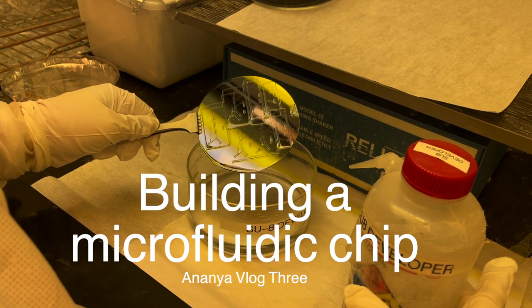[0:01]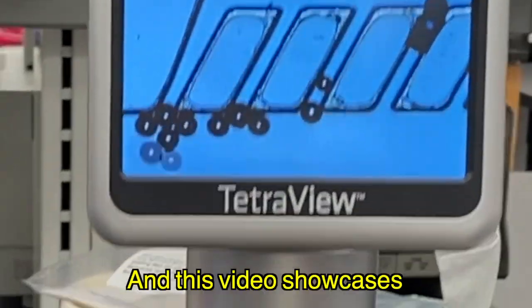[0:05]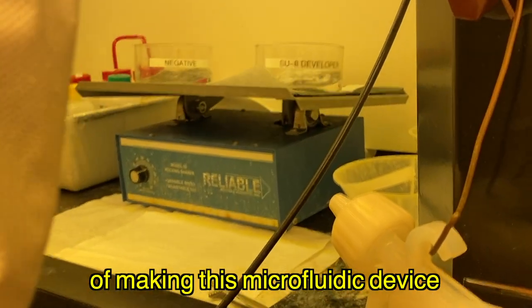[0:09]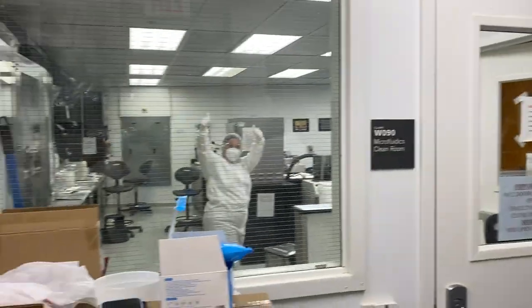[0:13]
Here is a microfluidic chip that can sort cells. And this video showcases the entire process of making this microfluidic device. If you're wondering why we went through all the trouble to make this device, let me explain.
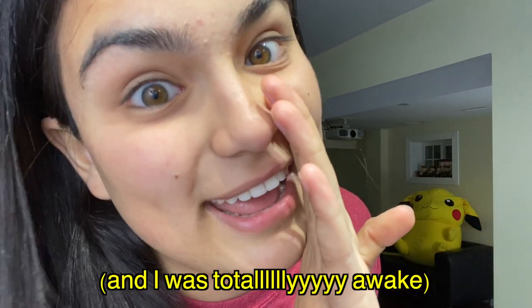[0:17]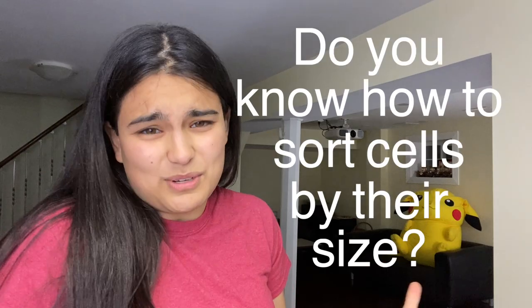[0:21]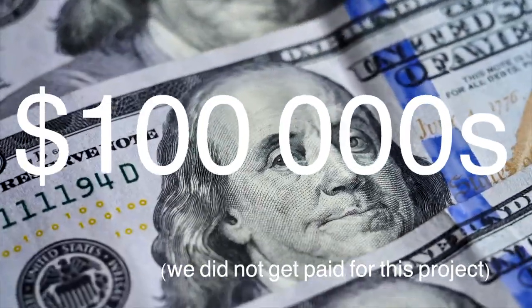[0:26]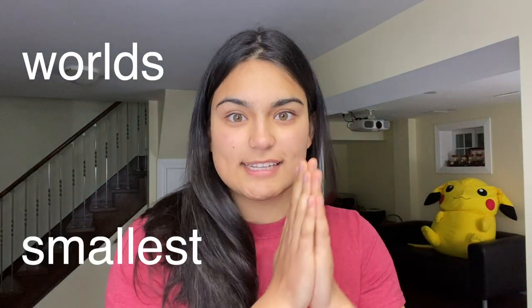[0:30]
So one day, I was in class on Zoom. And I was totally awake. And a Stanford researcher comes on our Zoom call and asks us, "Do you know how to sort cells by size? It would save me hundreds of thousands of dollars if you could." And I heard that and I woke up. She wanted us to build her the world's smallest cell sorter.
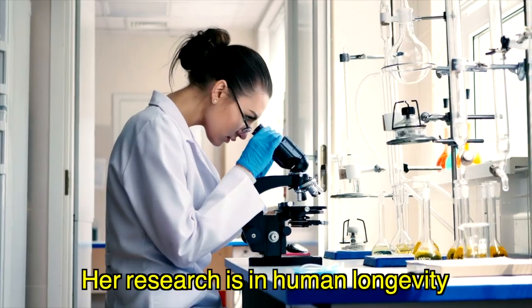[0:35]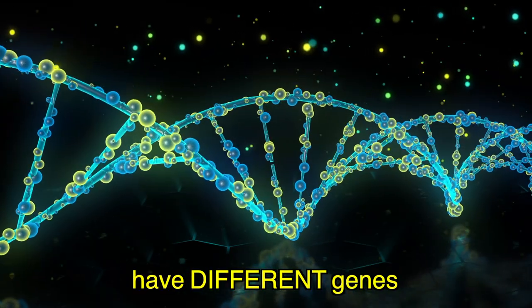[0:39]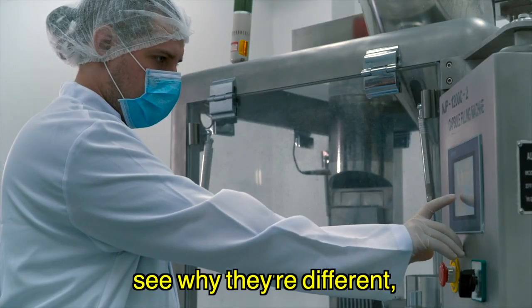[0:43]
So why does she need to sort cells so badly? Her research is in human longevity, and she realized smaller, younger cells have different genes than bigger, older cells. She needs to be able to separate them, see why they're different, and how we can come up with therapies.
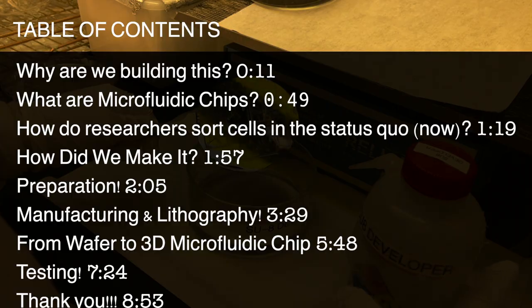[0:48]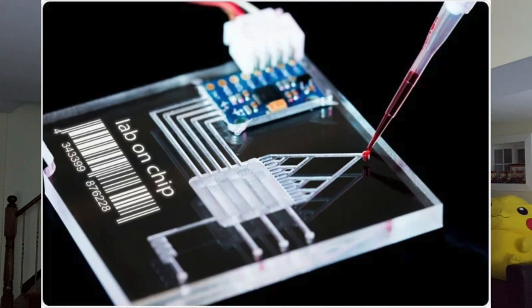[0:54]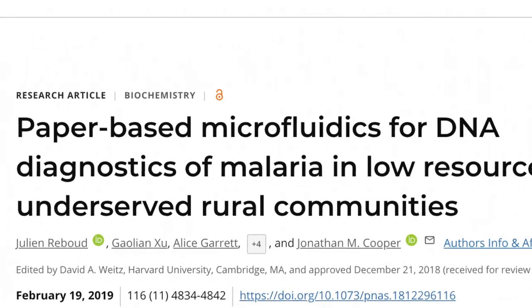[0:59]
Table of contents. First, what are microfluidic devices? They are small, scalable devices that can be used to diagnose HIV, malaria, do huge lab processes on a small chip. And the reason they're able to do this is because when you take fluids and operate them on a micron scale, it changes the laws of physics that particles in that presence will experience. So a particle going through a microfluidic device will not experience inertia in the same way. It will not experience the forces of the real world, which allow us to do fascinating things.
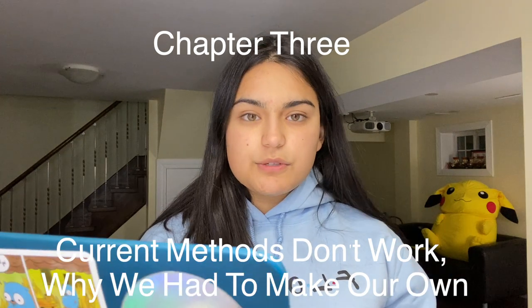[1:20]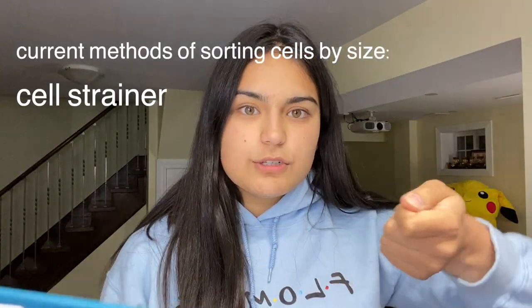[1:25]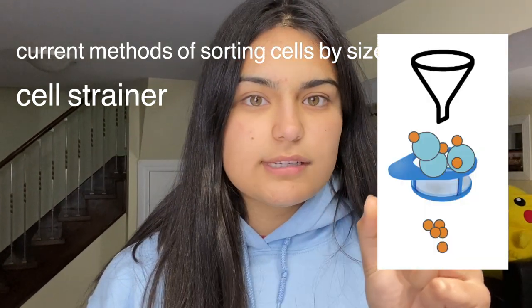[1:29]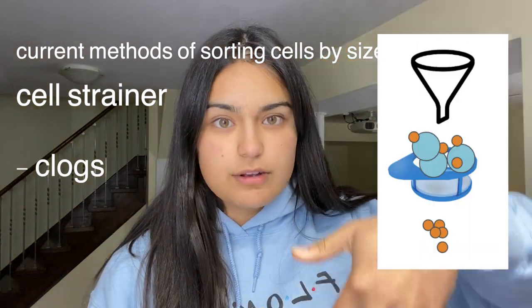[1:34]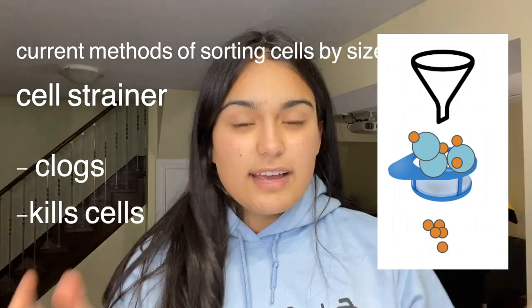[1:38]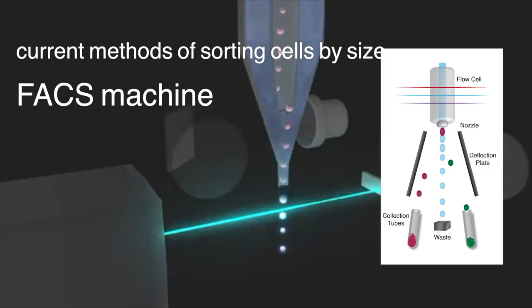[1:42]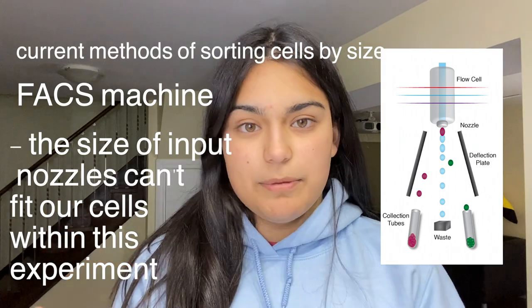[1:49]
Currently, if you want to sort cells by size, there's a few ways you can do it. You could use a cell strainer, which is just like a strainer, except the issue is that if the holes of the strainer are a certain size, big cells can clog those holes and prevent the small cells from filtering through. And the process often destroys a lot of the cells and reduces their viability. The second option is to sort by FACS machine, but the nozzles on those machines are usually about 100 microns, and the cells that we were trying to sort ranged from 40 microns to 200 microns, which could not be tolerated by these machines. And so we had to build our own device.
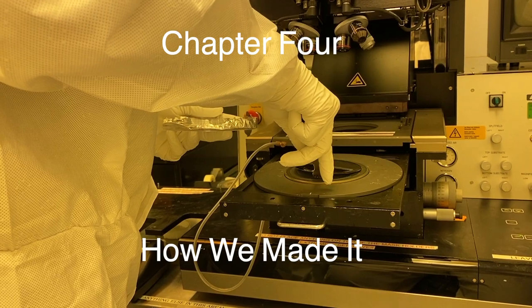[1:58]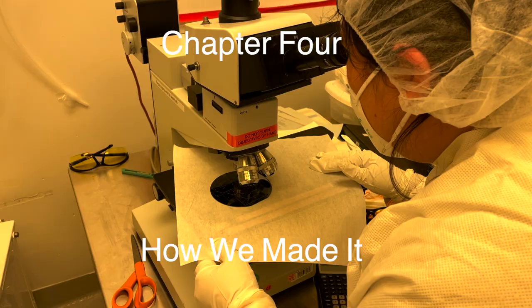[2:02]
So in this video, I'll explain to you how to build a tool that can be used in industry, so sit back, relax, grab a cup of tea. We'll walk through lithography, the process of making things that are so small, and manufacturing them, and how to do this. Now we have to get started on making it and doing the preparation.
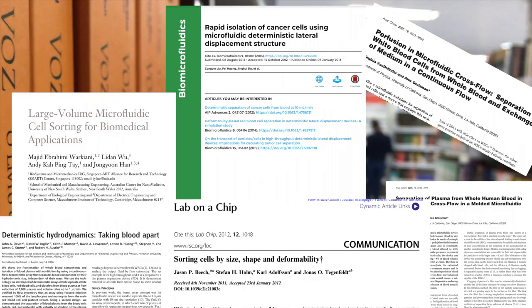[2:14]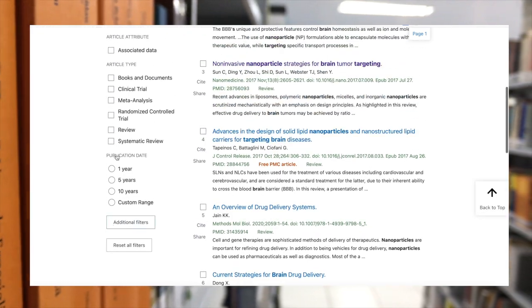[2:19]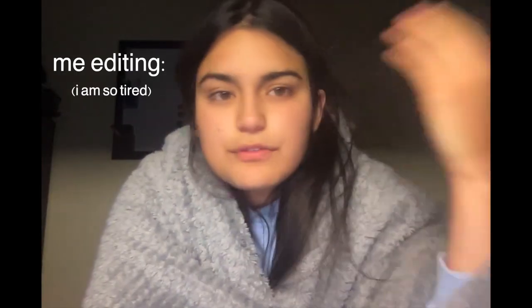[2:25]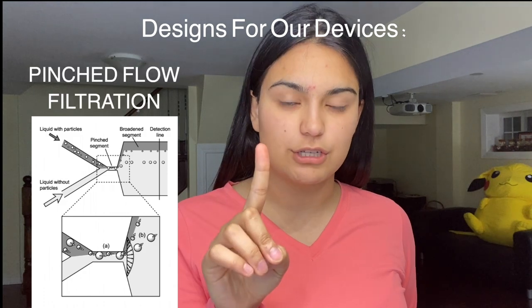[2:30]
When we began, none of us had made microfluidic devices and we had no idea what we were doing. So we had to read the literature, that's step one. And when you're reading literature on a new subject and you search in PubMed, it always helps to check this little box called review articles, because those are introductory articles. And we found there's a few ways people make these microfluidic devices. One was called pinched flow filtration, and the second one was called cross flow filtration.
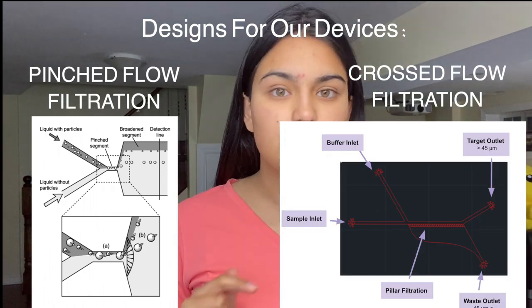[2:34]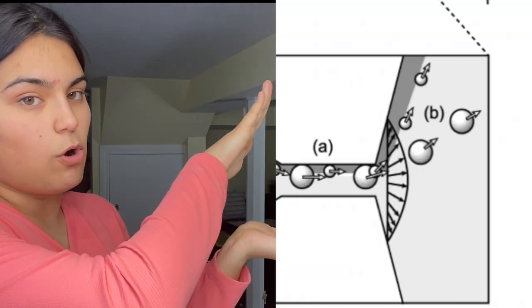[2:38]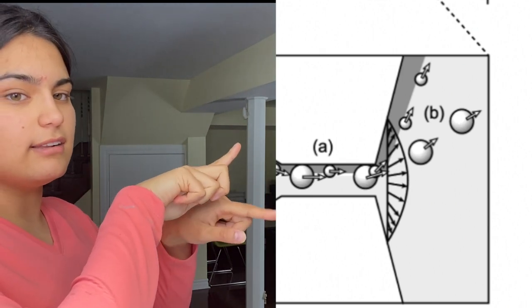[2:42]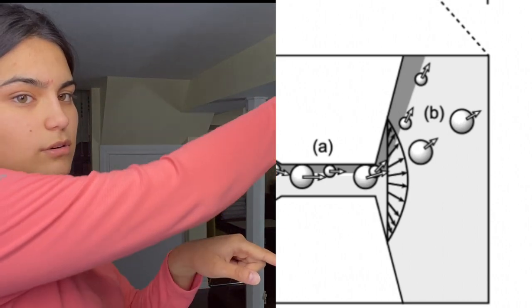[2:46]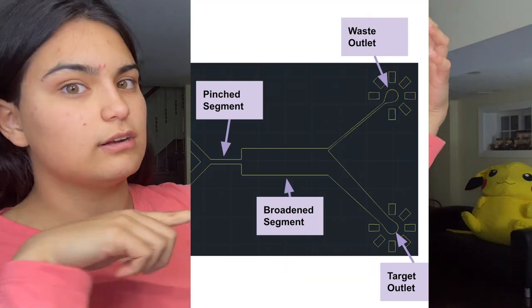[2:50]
Let's start with the first, pinched flow separation. How it works is you have all the cells going through a tube, and then you have an opening. And as soon as the cells go through this opening, bigger cells and little cells will diffract different amounts. So a little cell might bend across the corner and then go up this way, whereas a larger cell would go straight. If you make a little catcher over here and you calculate the angle, you know all the little cells will end up over here.
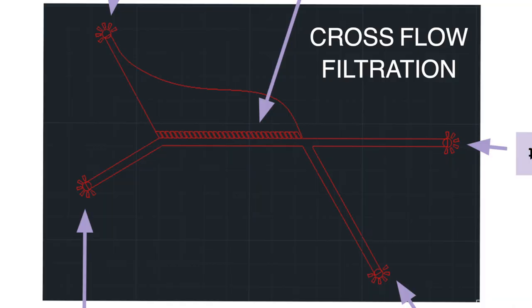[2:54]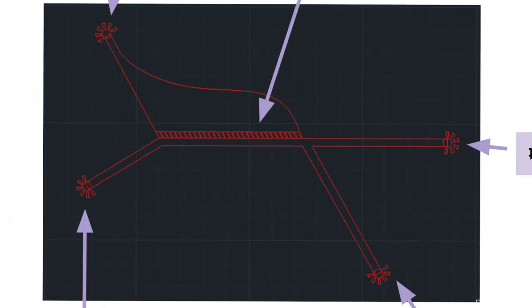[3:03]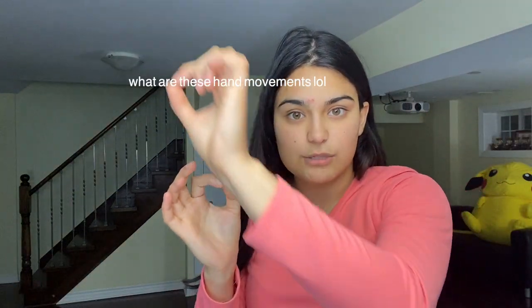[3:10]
The second approach that we decided to use is called cross flow filtration. You put in the cells, and in another inlet you put in a buffer. So you have the cells streaming and liquid pushing these cells to go upwards. And then over here you have pillars. So the liquid will push the cells upward. If the cells are small enough to pass through the pillars, they'll end up on the other side of the pillars where there can be a collection tube for cells that can make it through. And if they can't go through the pillars, because they're too big, the cells will go straight and end up in the bottom catching container. So those were our two approaches.
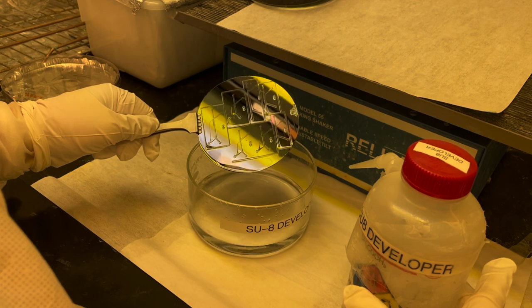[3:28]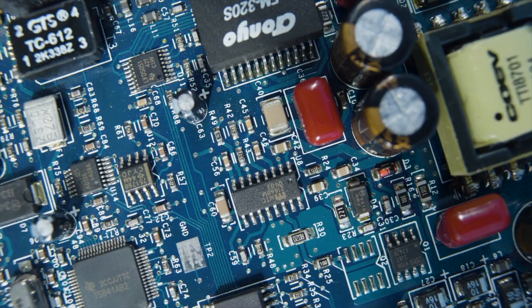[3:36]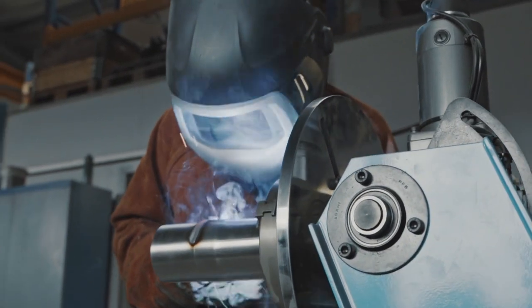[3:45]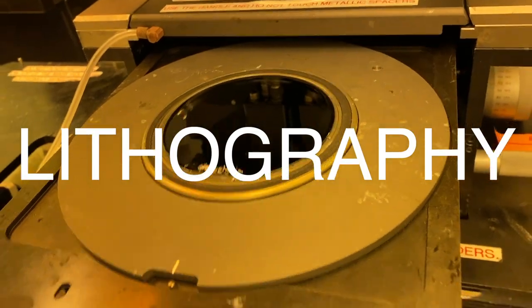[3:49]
Now, we had to manufacture them. And how do we do that? This, I think, is the most fascinating part because it draws on a lot of concepts that people use in making semiconductors and making anything that's small, really. When you want to manufacture something that's really, really small, how do you do it? You can't use welding, you can't use injection molding. Introducing lithography. Lithography is a fascinating concept where you can manufacture things at extremely, extremely small dimensions.
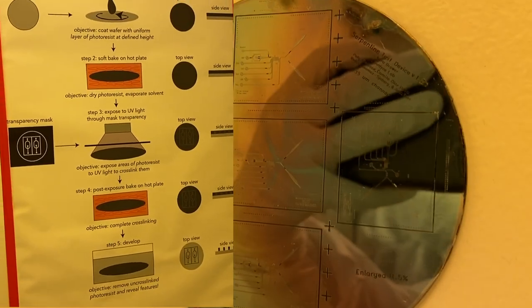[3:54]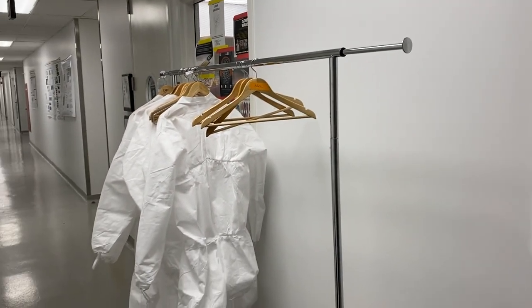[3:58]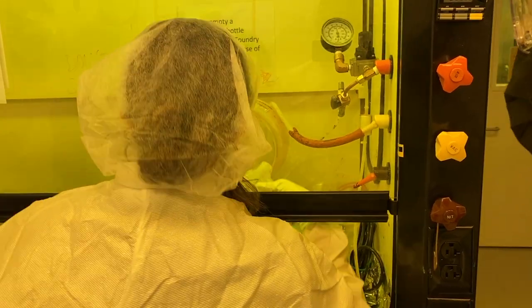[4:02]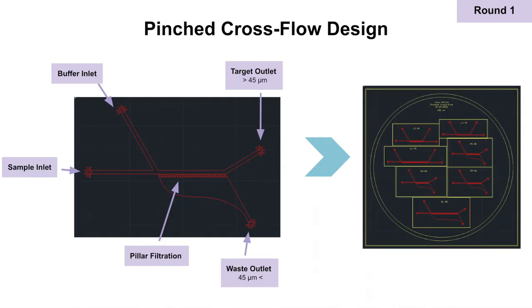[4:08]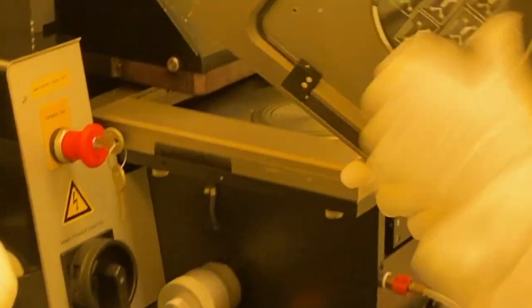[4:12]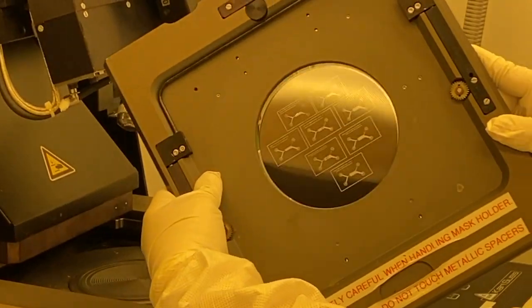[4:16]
To do lithography, you go in a clean room. That means yellow lights, because the light is filtered. It means putting on these clean room suits, so no dust and hair gets in your particles. The first step towards manufacturing this was that we went into AutoCAD and designed in CAD and then sent the designs to a mask printer in order to print these CAD files onto a lithography mask. You start off with a silicon wafer, and you can put something on the silicon wafer called photoresist. Photoresist is this incredible compound that when exposed to light, it changes its chemical properties.
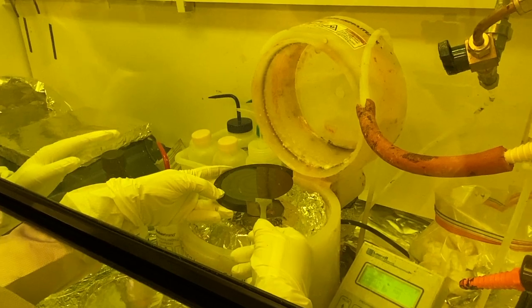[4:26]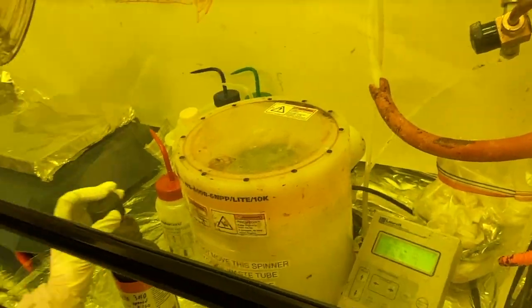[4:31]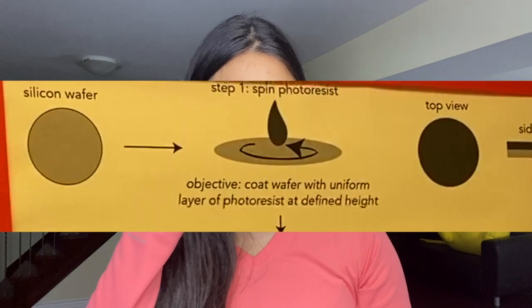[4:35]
And it's like, how do you put a uniform layer on something? Well, you do something called spin coating, where you put on the stuff and then it makes a blob and you spin it really fast and then the blob flattens into a uniform layer. So you have a uniform layer of this compound on your wafer. And then from there, we shine light onto the photoresist.
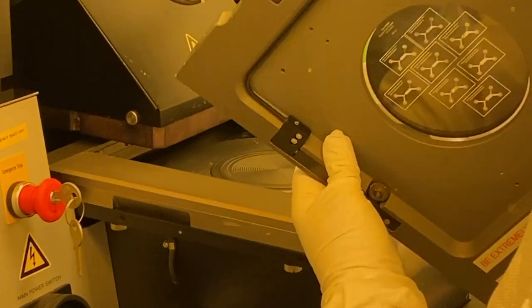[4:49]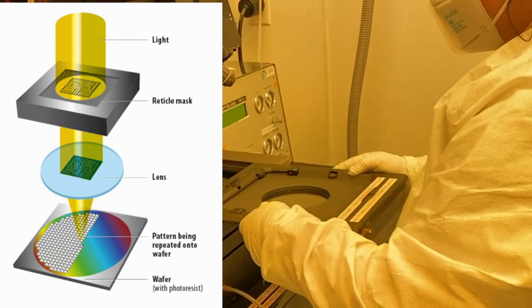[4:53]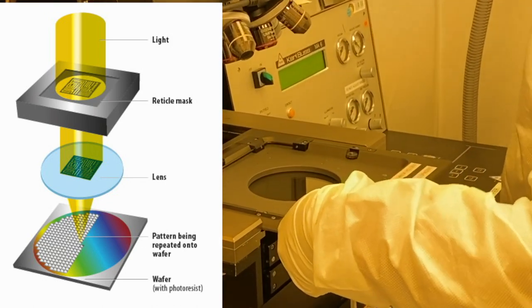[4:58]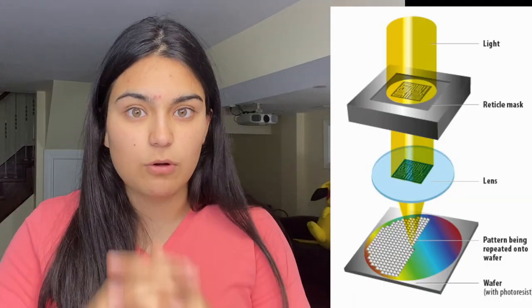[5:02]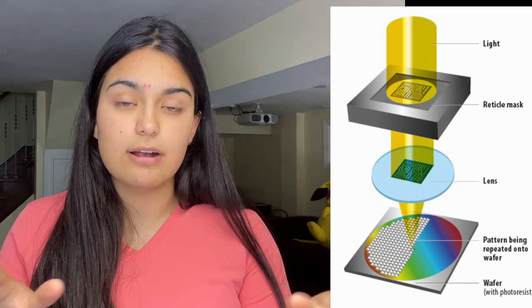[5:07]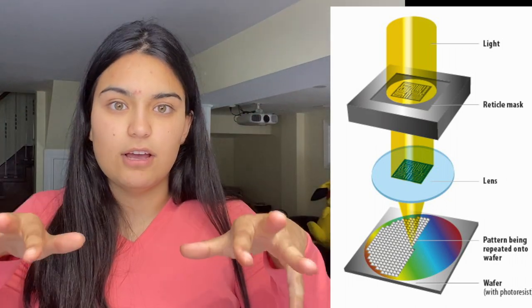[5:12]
So if you have a mask and the mask only lets through some holes of light, so it's covered except for your design that's let through, the light will only go through where your design has left holes onto this mask. And then the light will shine where the holes are, and it'll only change the chemical properties of the photoresist where you want them to be changed. So in those areas, the photoresist will harden and it will cross-link and change chemical structure. And the other areas that were not hit by light because they were covered by the mask will be soft
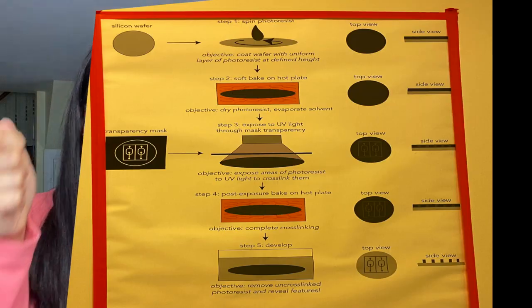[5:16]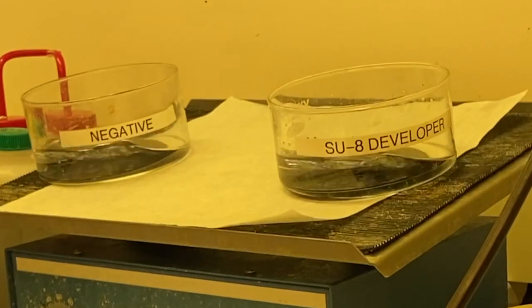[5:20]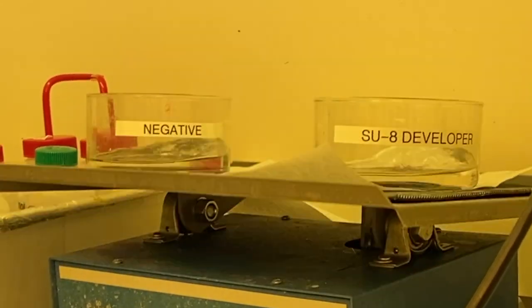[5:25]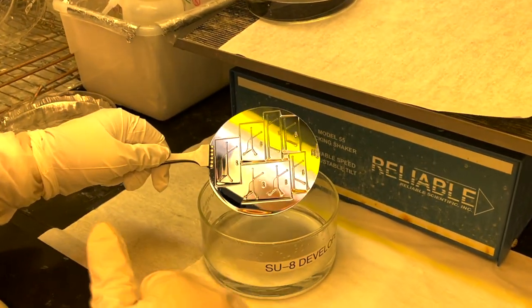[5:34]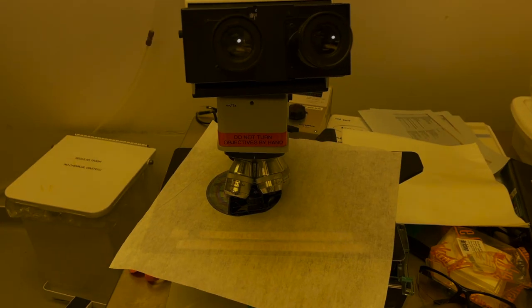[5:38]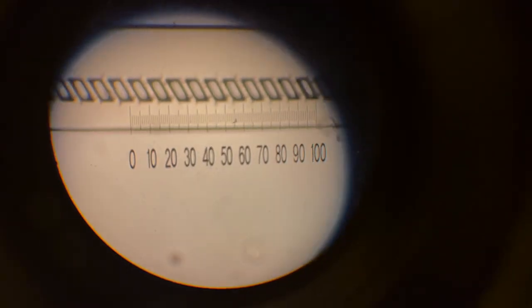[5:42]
and loosey-goosey. Then you're gonna take the wafer and you're gonna put it into something called a developer. And the developer will wash away all the areas that were not hit by light, because the developer will react chemically with the areas that are still soft, and it'll leave the areas that are cross-linked. And so what ends up happening is you're left with a wafer that now has nanometer level indents and structures that were caused because of this light changing the photoresist being washed away formula.
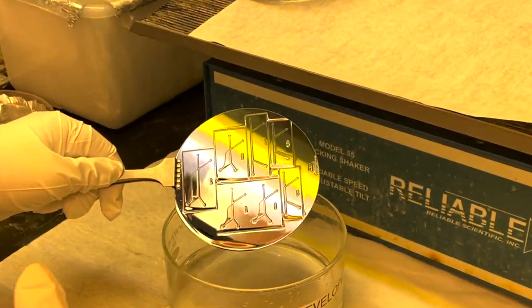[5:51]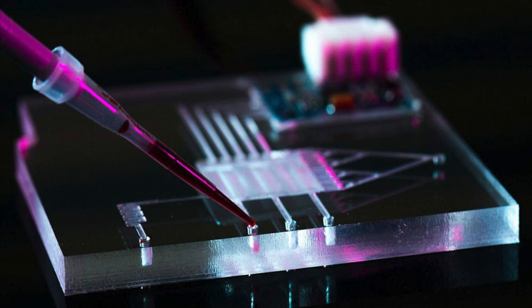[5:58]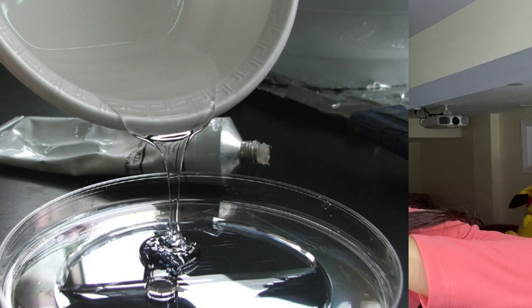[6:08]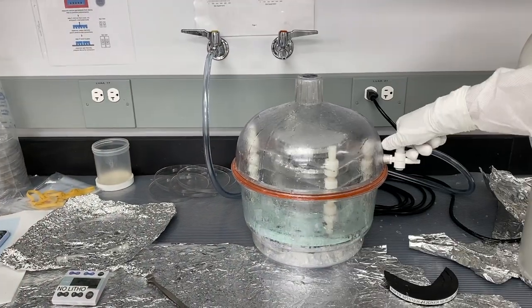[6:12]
And now you're like, Ananya, how dare you dupe me? We have a 2D structure here. How do we turn it into a 3D microfluidic chip? Because a microfluidic chip, you have to inject cells into it, you have to put liquid into it, but right now we have a silicon wafer with some lumps on it. From here, we want to use this gel called PDMS and pour the PDMS onto our silicon wafers. Then we put them in a vacuum chamber, and the purpose of this was so the PDMS would remove all the air bubbles. So it'll just be solid PDMS blobs on this silicon wafer.
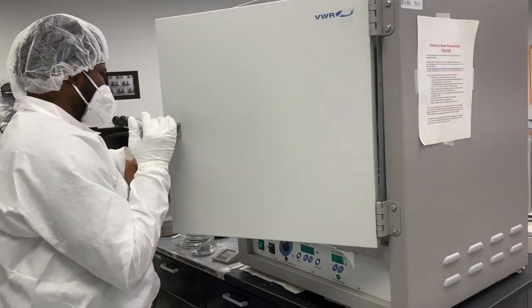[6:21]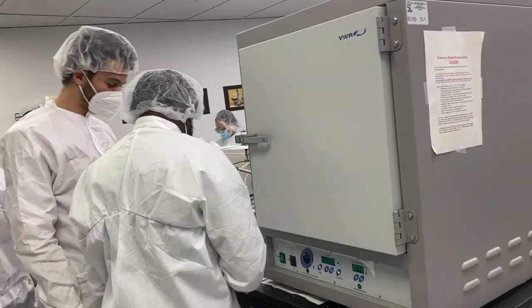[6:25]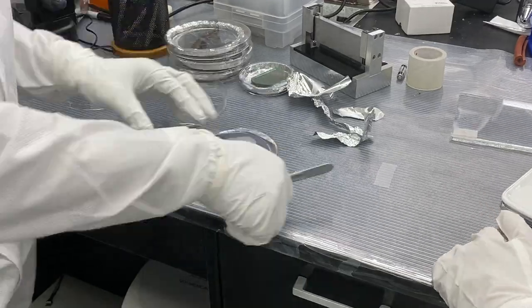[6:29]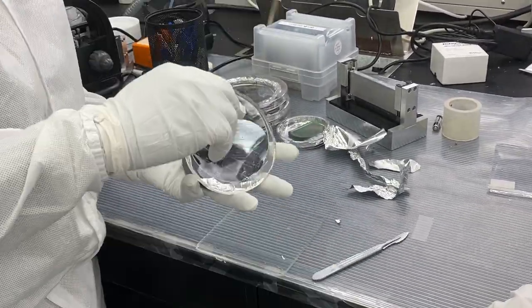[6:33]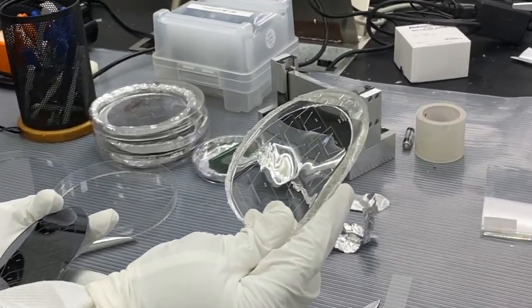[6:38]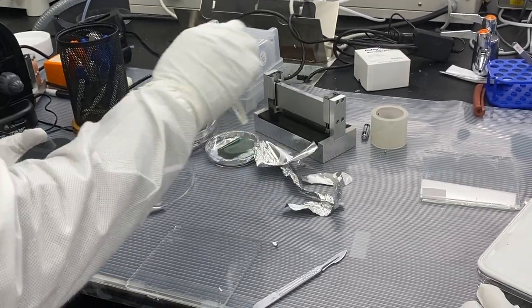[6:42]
Then we put it in an oven, and the PDMS heated up and turned into a solid. When we took it out of the oven the next day, it was like a gel that was stuck on top of the silicon wafer. From there, we peeled it off the wafer. So now we have this gel that has a bunch of imprints on it. So like a bunch of little indents where we wanted it to be from our wafer. Like they're to the nanometer level precision.
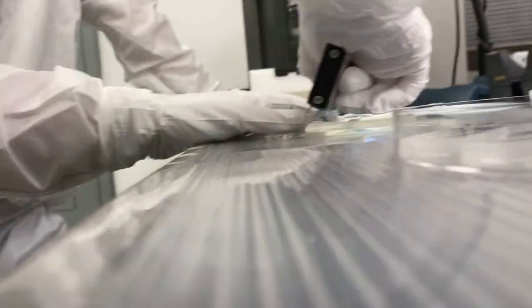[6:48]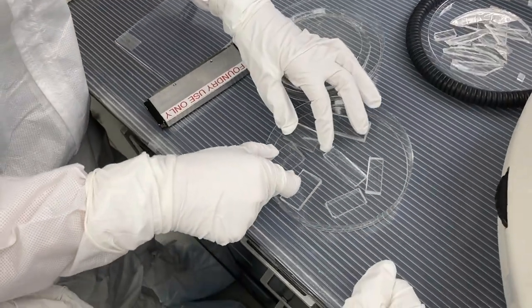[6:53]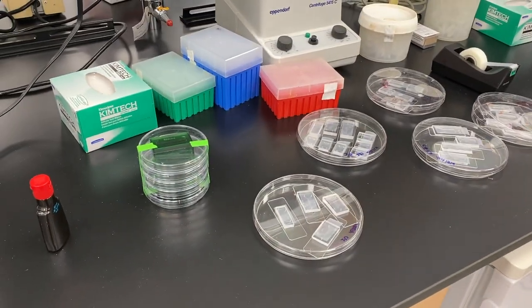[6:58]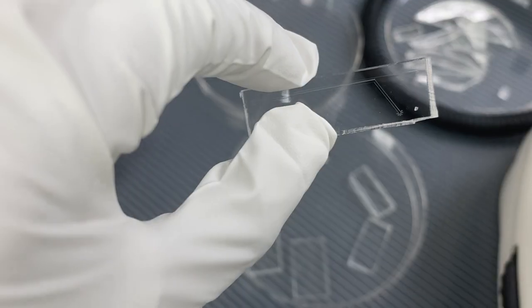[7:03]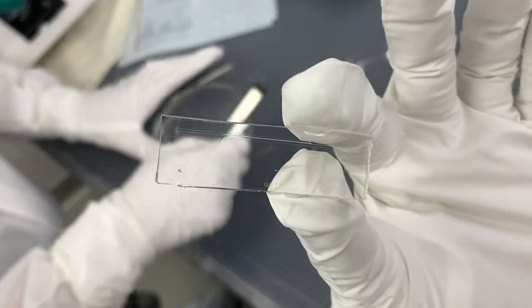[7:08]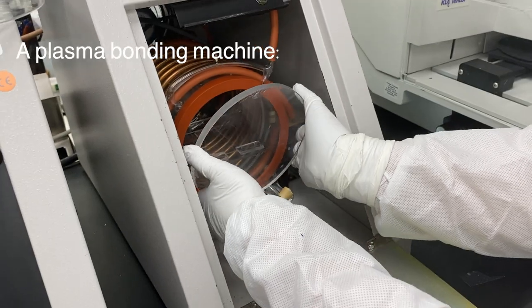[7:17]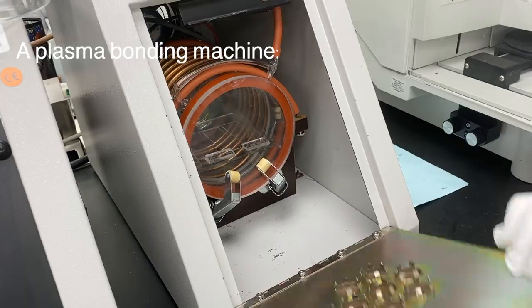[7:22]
And then we cut them up so they look like tiny little chips rather than being many chips on one wafer. Glass slide, which serves as the bottom. We have our gel, and we can punch some holes onto our microfluidic device. And these holes will serve as where we can plug in the inlet and outlet tubes, because the inflow liquid will flow into the tubes, into the holes, through the microfluidic channels on the glass slide, and then out through the output holes. And we bond them to a glass slide.
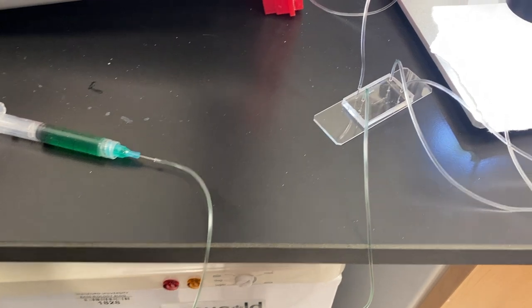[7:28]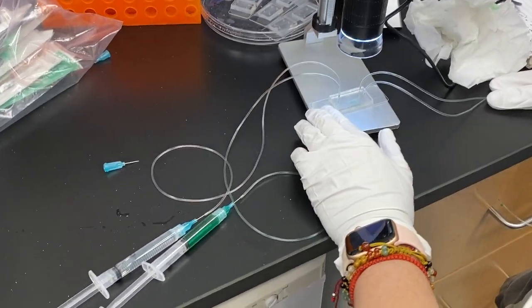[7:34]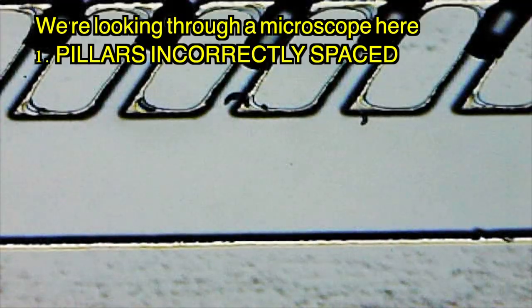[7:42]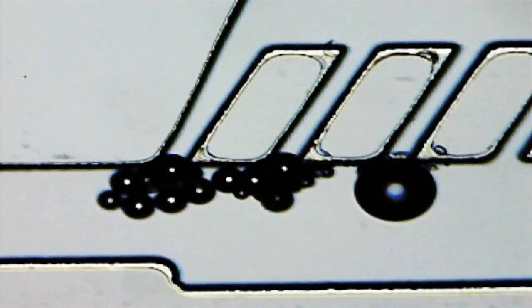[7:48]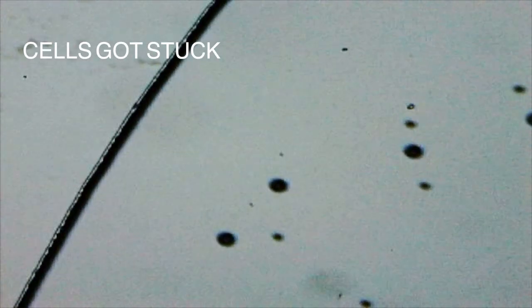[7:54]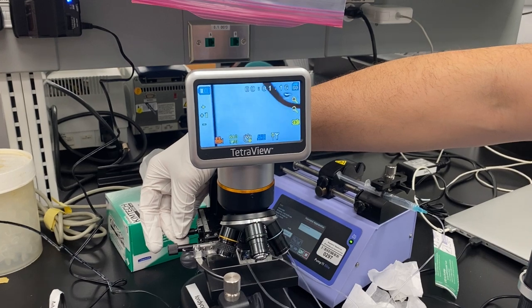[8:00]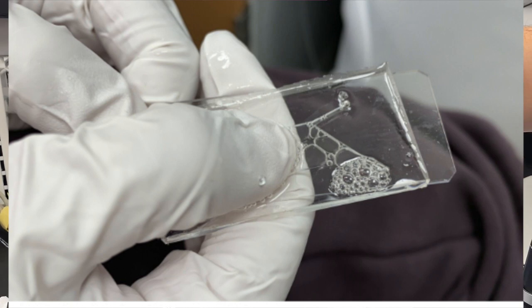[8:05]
And we plasma bond them together so they will never, ever, ever divorce. And from there, we tested it out and we hooked up the microfluidic device with our tubes of cells and buffers, and we saw what happened and it didn't work. Well, the first time we did it, it didn't work because of a few main reasons. The first reason was for the cross-flow filtration, the pillars were incorrectly spaced apart. And so cells of the incorrect sizes could fit through the pillars. The second issue was cells would get stuck to the bottom of the glass. They wouldn't flow through like we thought. They would just sit there and get stuck. And the third thing was that our pinched flow filtration device separation didn't really work out. And there was a lot of bubbles. Our microfluidic device had bubbles, which is bad.
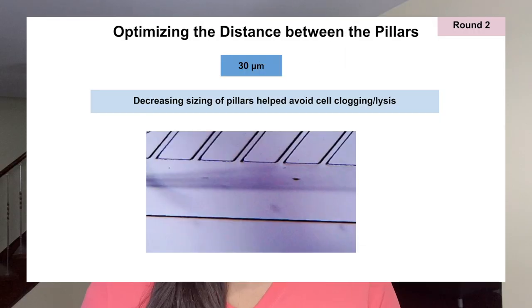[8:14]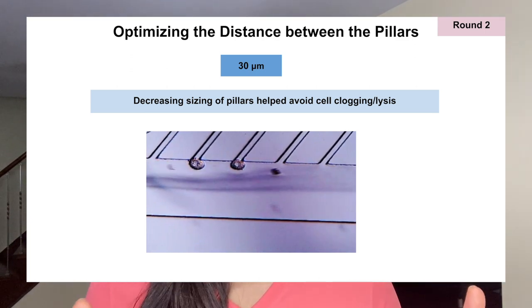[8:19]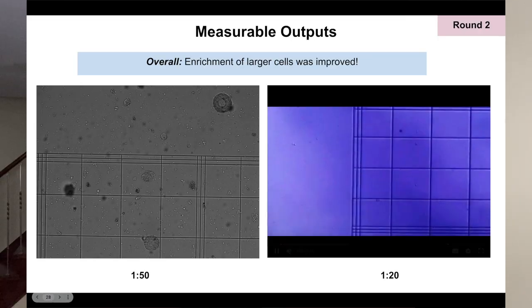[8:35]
So what happened next? Well, we went back to the beginning of the process. We changed the distance of the pillars. We realized you could add a buffer to microfluidic devices so cells flow through without sticking to the bottom. And so we added this solution and we stopped worrying about the pinched flow separation and just did the cross flow filtration devices the second time with different filter lengths. We made new devices and it worked. And after we quantified how well it worked, because we wanted to see, did it actually sort out cells of the right size? So we took out cells before filtering and after filtering, put them under a microscope, and we saw that we did actually see our cells be separated.
So then we gave it to Jing, who had a great day, and our project was complete. Huge shout out to Professor Fortis, because it was her class that we took that taught us how to do all of this. And also my team, Ziad, Cassandra, Vincent, and Danielle, who were amazing and I got to build this project with for Jing, our collaborator.
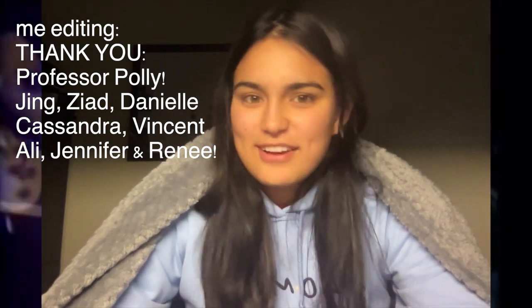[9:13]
And I definitely learned so much from the class that Polly taught us, and also the team members, because they were all very bright and they showed me the way. So huge shout out to them.